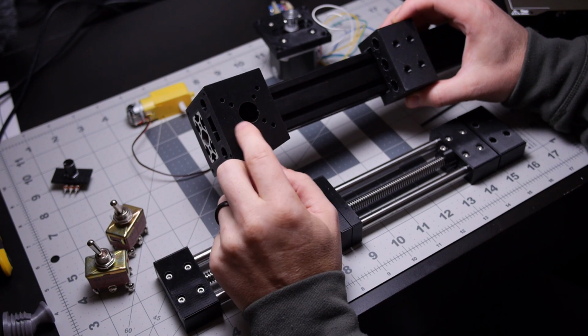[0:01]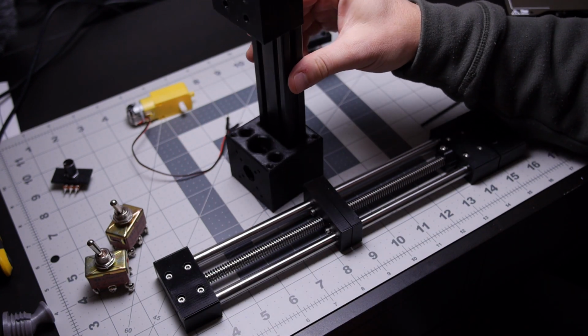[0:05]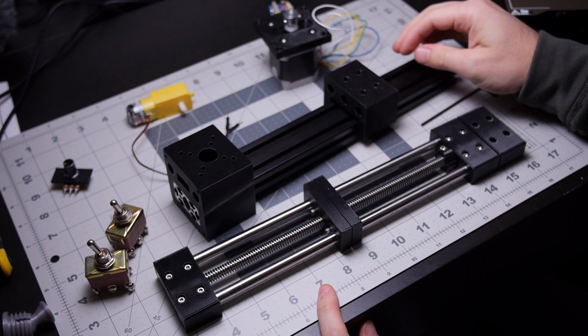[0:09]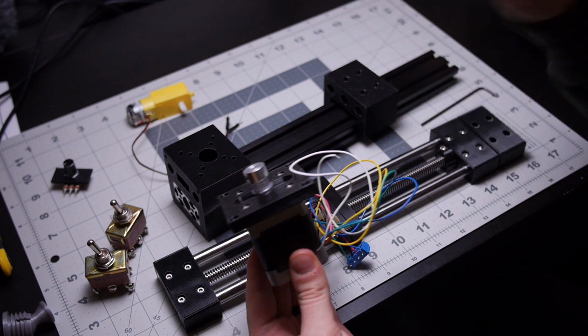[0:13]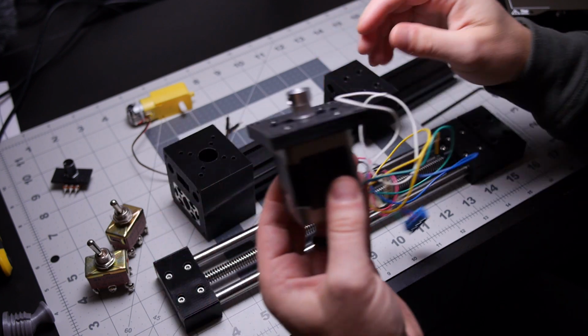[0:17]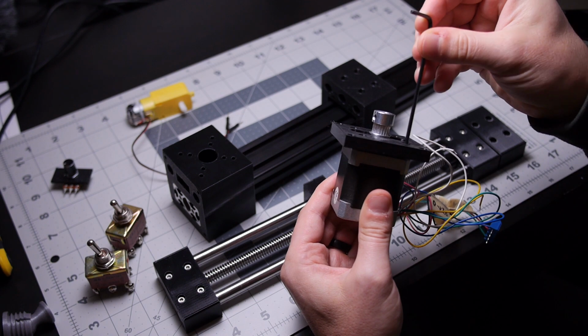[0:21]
This is a future microscope stand slash camera slider, and I've already tested it with the stepper motor mount, and well, I'll show you what I discovered there, which is exactly why I like 3D printing so much, because I can just put what I think makes sense and then print it while I work on something else, and then I get the real part and I can see where I was way off, and then make some changes and do it again.
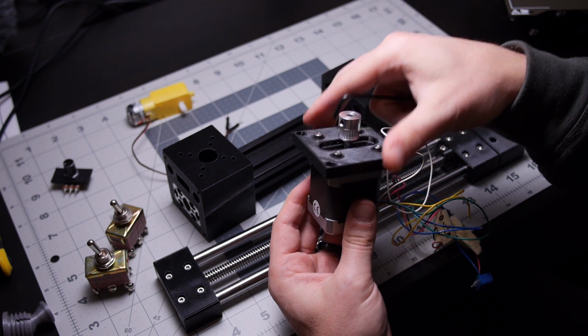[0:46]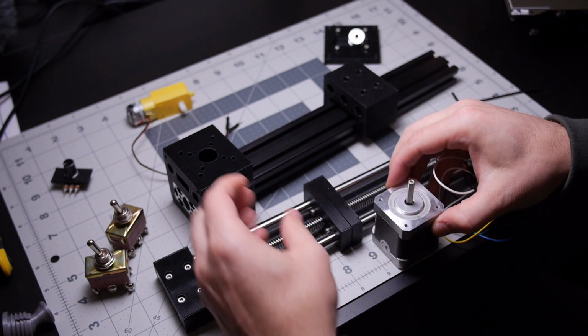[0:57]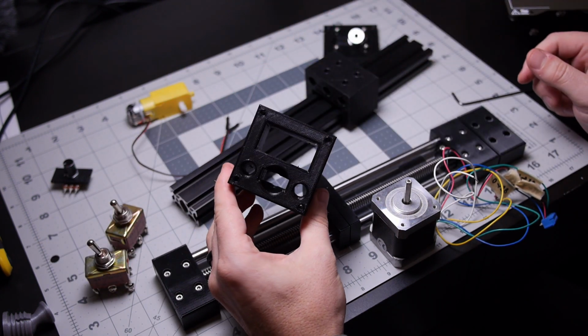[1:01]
So it's a really nice way for someone like me who likes to see, feel, touch things, to see how stuff goes. So this is that part that I printed the other day, and trying to make it for multiple options.
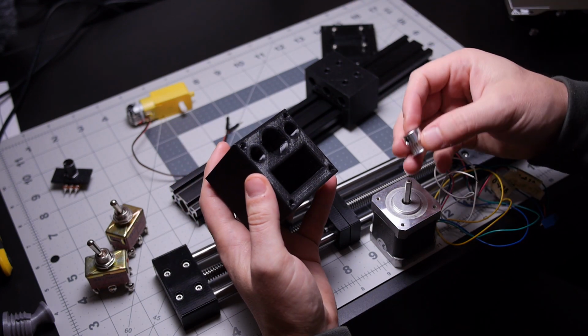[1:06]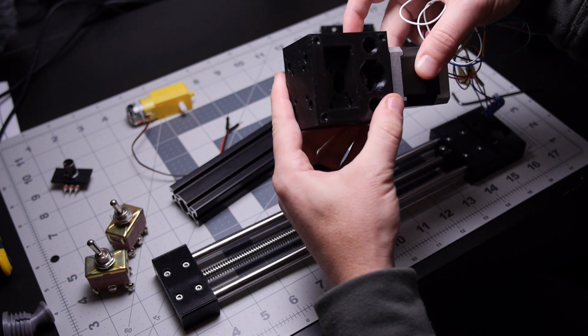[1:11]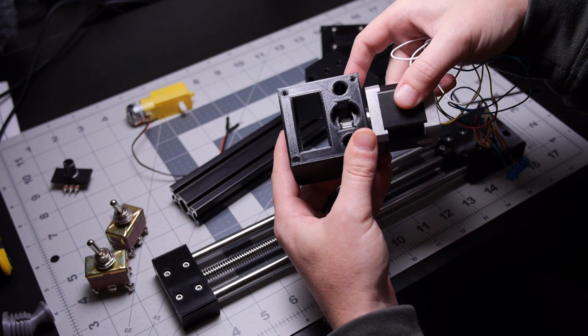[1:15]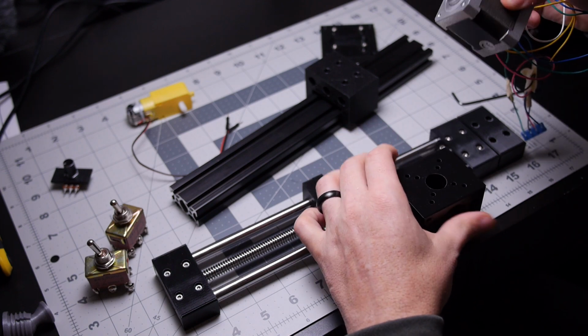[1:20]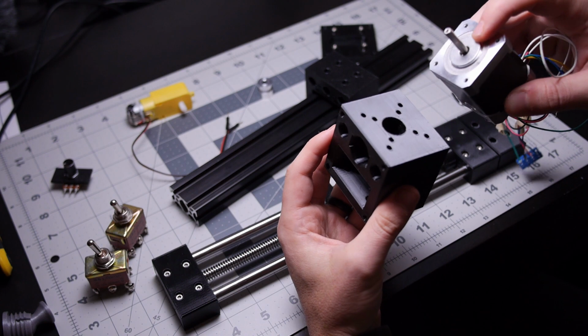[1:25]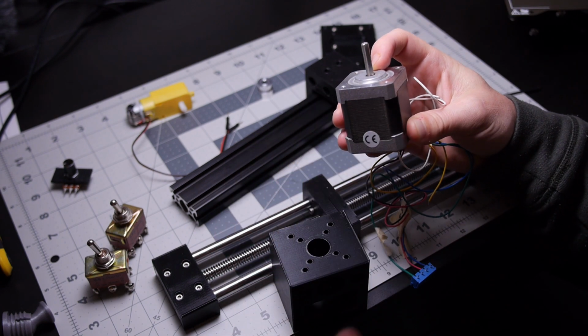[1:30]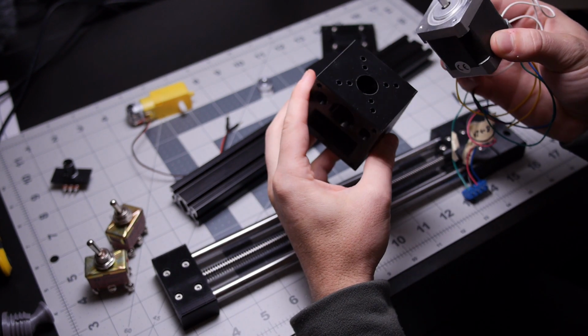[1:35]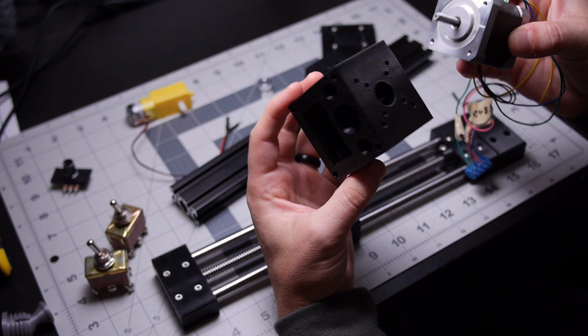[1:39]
So as an example, you can run it with the timing belt, but as you probably could see there, what I didn't account for is this bump on the stepper motor. It actually has this sort of raised ring right there. So I didn't make a counterbore hole for that to go in, so that wasn't working.
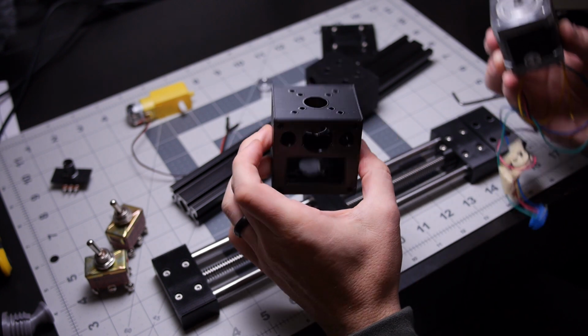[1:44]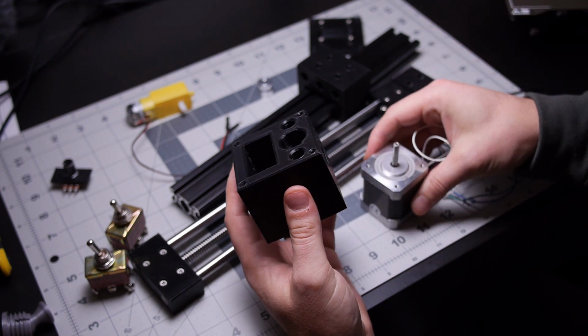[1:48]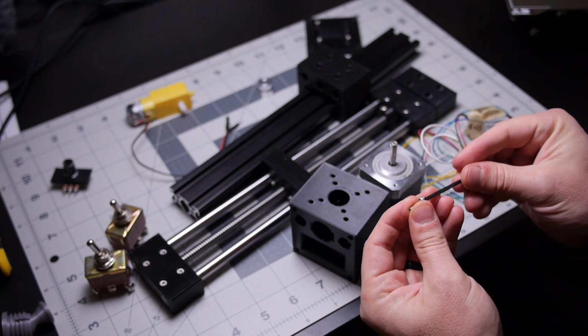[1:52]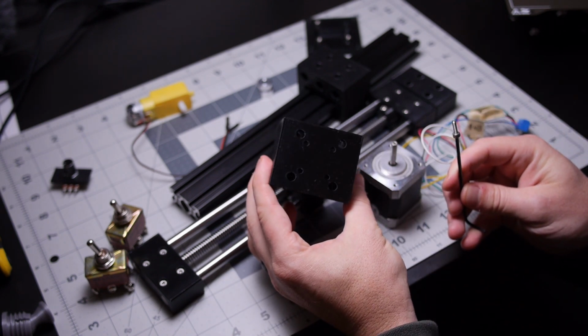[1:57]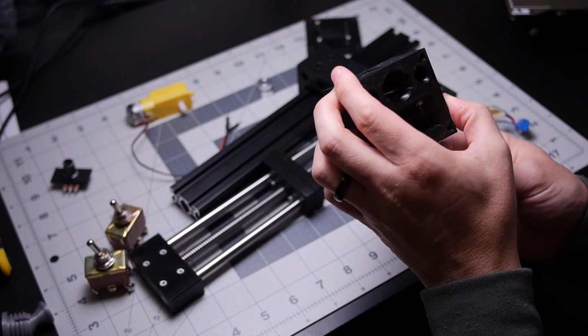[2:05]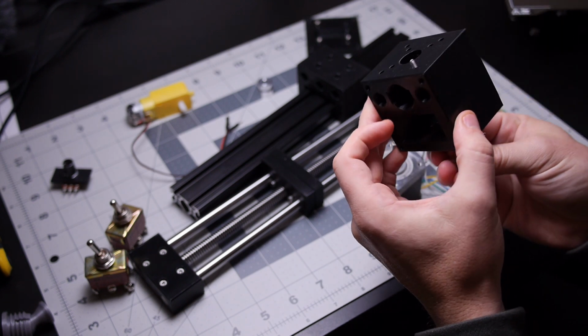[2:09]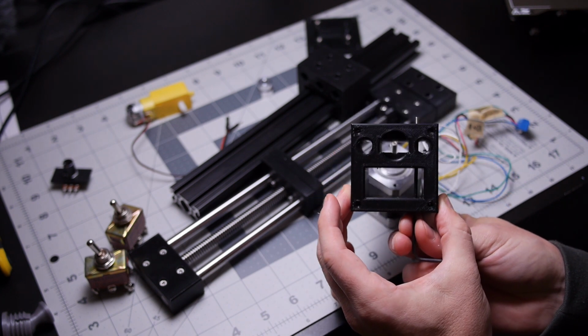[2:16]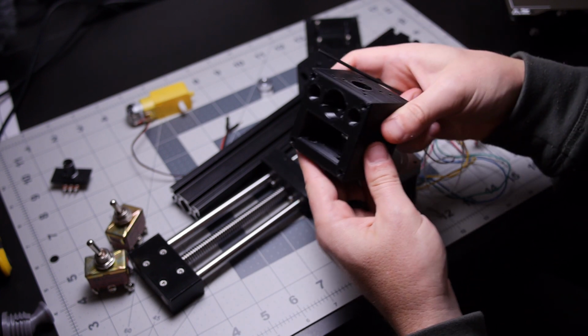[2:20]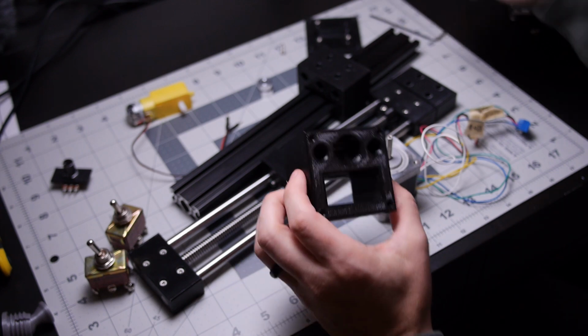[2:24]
Hole placement worked, and what was actually really neat is how I thought to attach this, which I will just show you here. I went through from the bottom there, so you can see through. I put holes all the way through the shaft openings so that you can stick a screw all the way up through there and attach it that way. And once you get that in there, there's still clearance for the shaft. The only downside is that obviously the shafts have to be installed after the motor, but I thought it was a fun little thing to test.
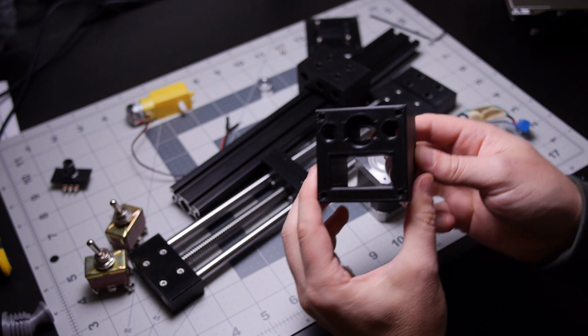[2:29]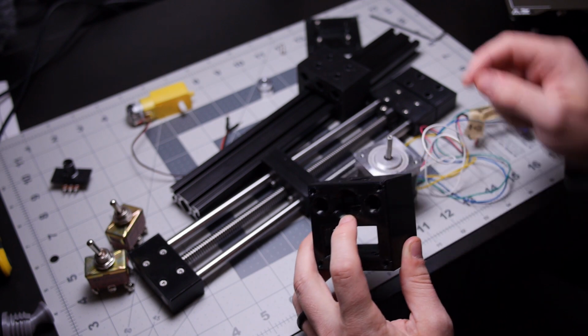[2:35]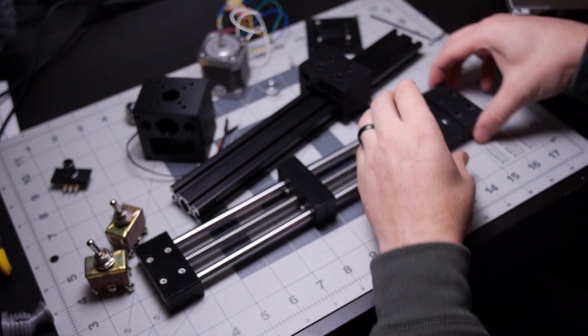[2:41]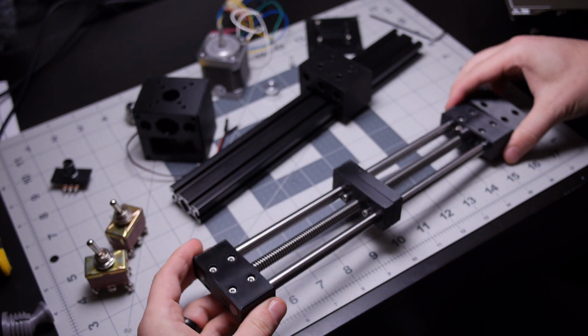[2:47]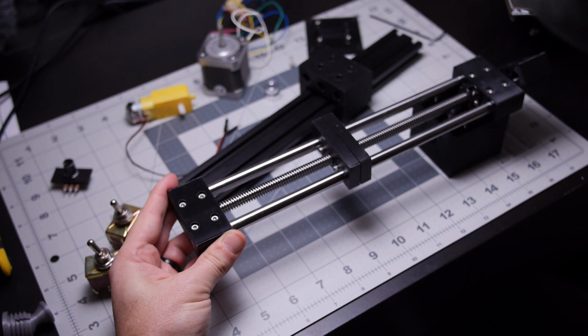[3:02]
But now I want to see if the inside diameter in here is big enough for this 3/8-12 shaft or threaded rod that I've got. So this was the first sort of test that I did. I will see if I can show you how this works. So this is just a basic little slider. See, is that in focus? There we go. So this is just a basic little slider that I made. Works really well, but that was my version 1.
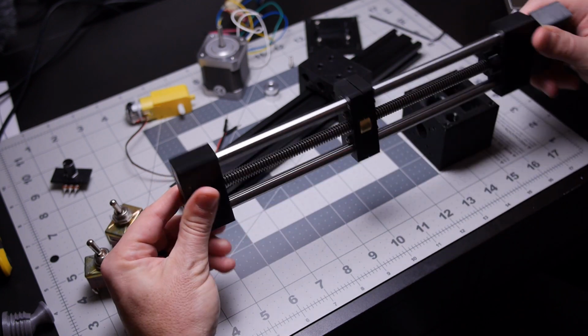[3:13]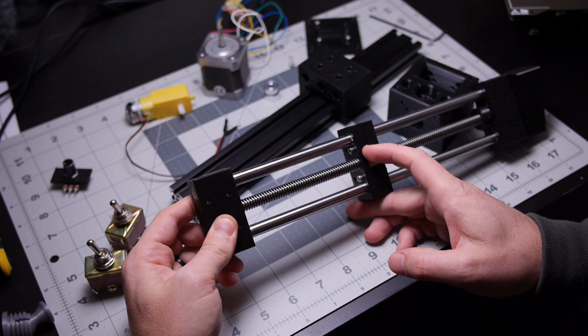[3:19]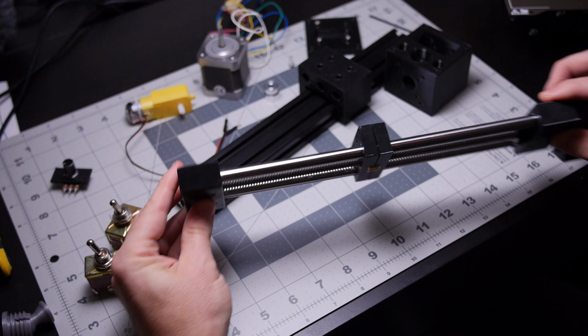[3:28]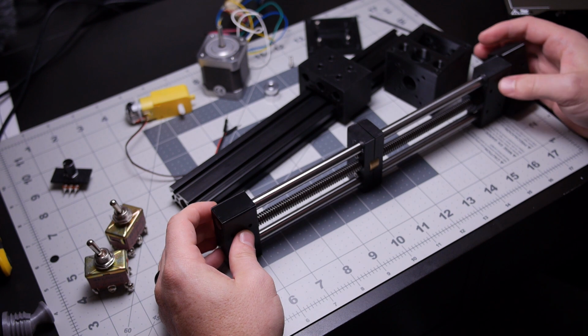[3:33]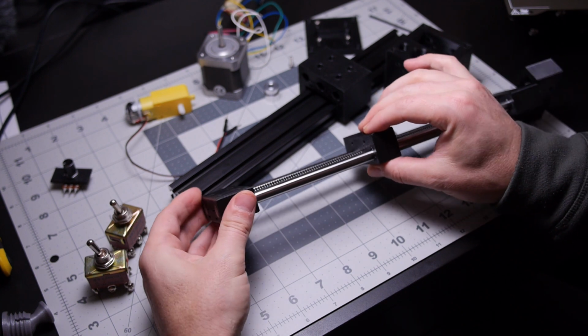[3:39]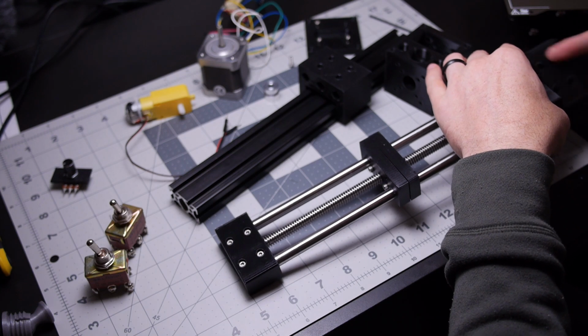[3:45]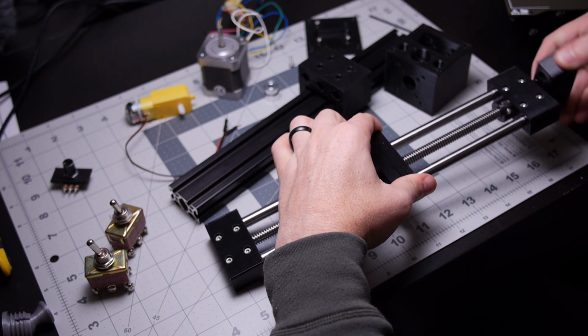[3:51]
This needs to be a little bit wider, and you can see here's the threaded nut that transfers the motion. What I tried for here is like a sandwich version where it squeezes it together, but you can possibly see from there that there's a bit of an angle where it's tighter at the top than at the bottom. So that's not ideal because that's putting a little more pressure on the shaft, which is making it not slide as smooth as it could. And the second thing is that it's just too narrow, so if you were to apply any force there, it's going to bind a lot quicker. But anyway, that was a quick version 1.
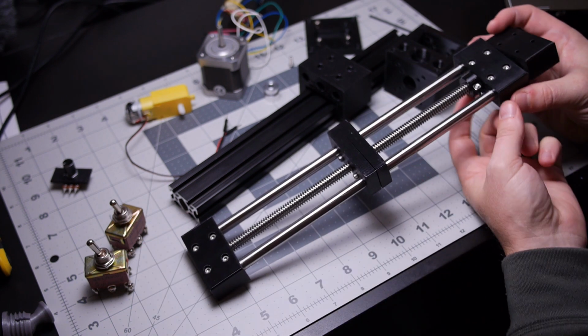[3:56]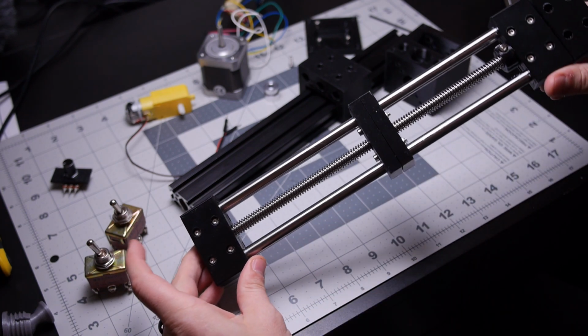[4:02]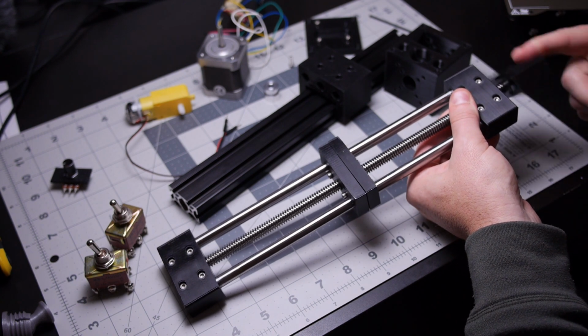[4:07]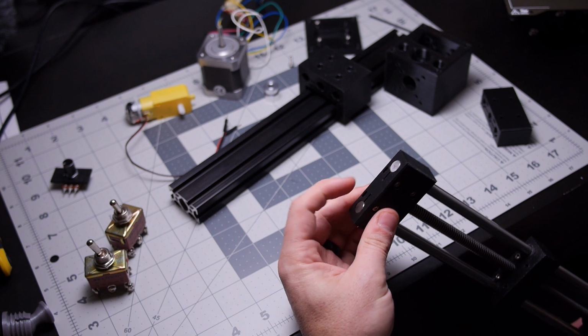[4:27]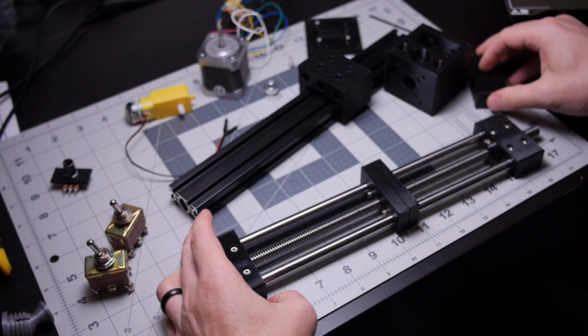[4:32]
I also did this shaft collar, which works totally fine. Now I'll show you a bit about this. This end, it goes all the way through. This was just an earlier piece that I made that I used as a handle then. But this goes all the way through, just like this one here. And that's where this is sticking out to attach a gear, motor, handle, whatever. But then at the other end, that is capped off, so it only goes in about this far. So that acts as the bearing and also the stopper on that end, so that the only stop you need
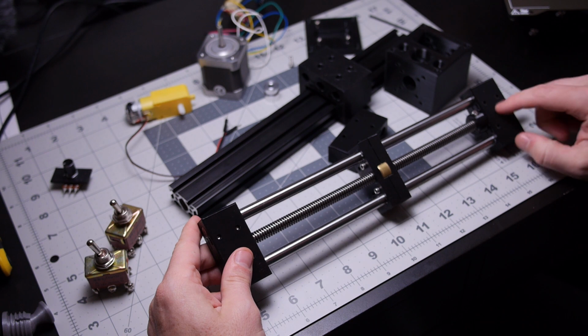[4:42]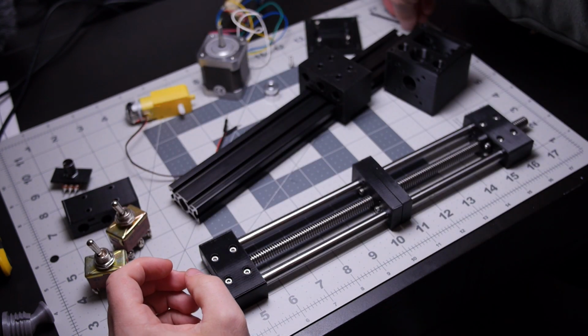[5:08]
is this piece here. Now with this, the only 4 pieces that are not printed or nuts and bolts are the 2 shafts, which are 3/8 by 12 inches, the threaded rod, which is 3/8-12 threaded, and the nut for the threaded rod. That's it. Everything else is just using these plastic pieces as the bearings and the frame and everything. And I'll show you that while I take that apart and then test this with some of these other pieces.
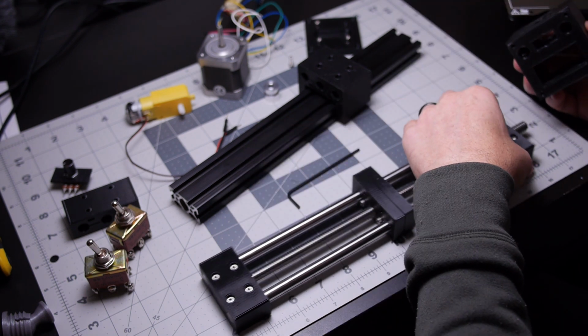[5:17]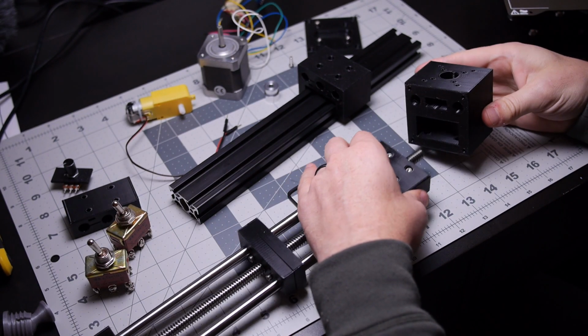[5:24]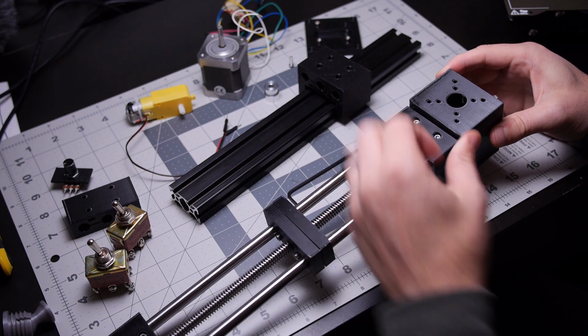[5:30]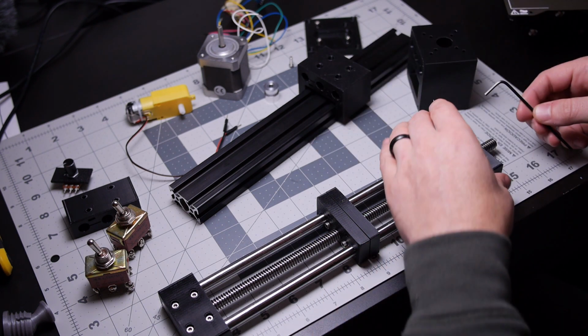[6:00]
Actually, I guess we can test this. We can do this first test without really anything else. Let me get it focused in over there. All right, so it goes in and spins somewhat freely. Again, the reason I'm doing this is because I wanted to see if I could do both a timing belt passageway and also the 3/8 inch threaded passageway. I don't know if it's a good idea, but while I was printing, yeah, I mean, that's pretty smooth. While I was printing the whole thing, I thought that would be nice to try.
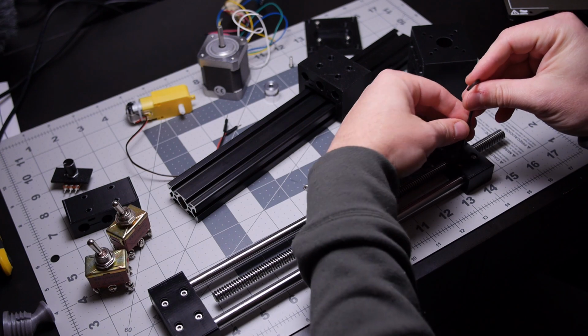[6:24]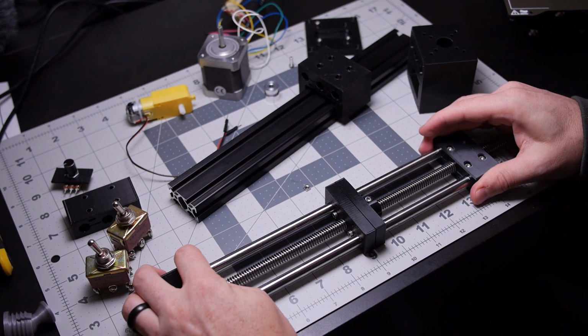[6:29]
All right, we can take this apart now and then see if the shafts are going to fit in there. There's that. And these just squeeze the shafts a little bit tighter. And I'll show you how these work in a second. I wanted a looser fit. The first ones that I did were a pressure fit and just crazy tight.
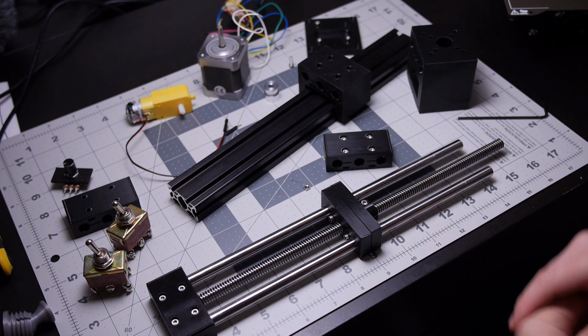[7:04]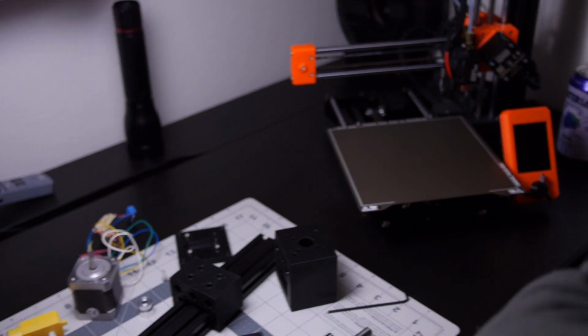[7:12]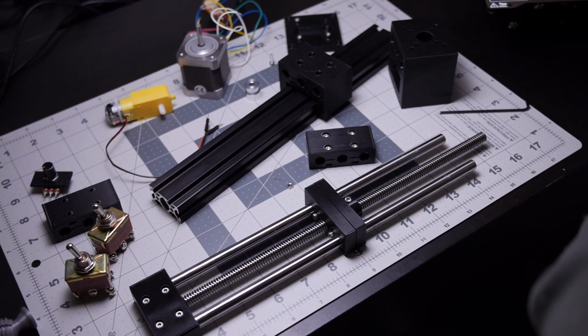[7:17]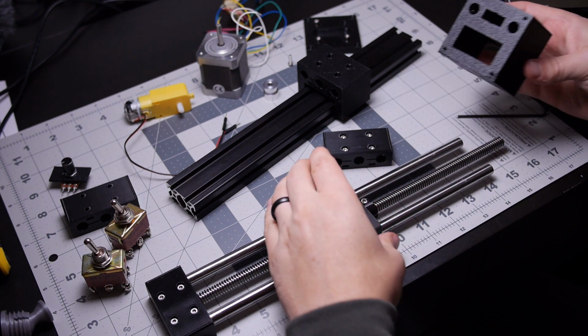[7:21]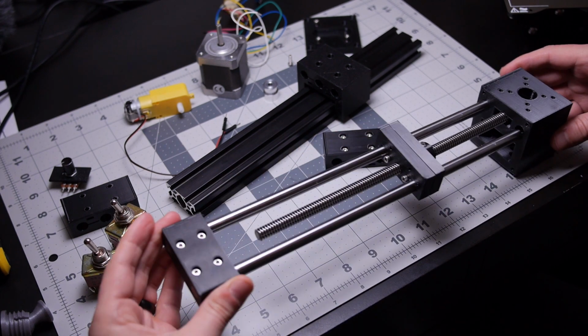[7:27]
Okay, so I think you can see in here there's some square nuts that are just slid in there, and then M3s come down through the top, go into the square nuts, and then I did these two slits in the face to squeeze on the shafts, and I left a little bit of solid material around here to keep that from getting squeezed. Now, this isn't exactly my own original brilliant design. If you look closely at that, you'll see some similar design patterns. But, all right, let's see if this is a suitable replacement for that. Ooh, perfect fit there. That's really smooth.
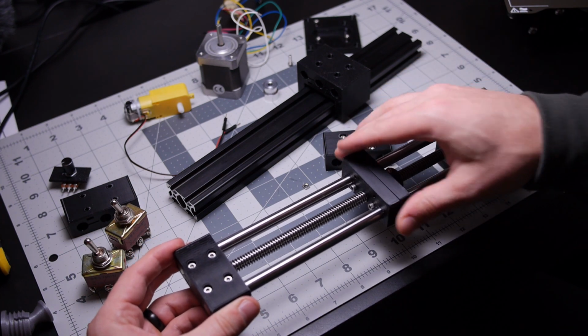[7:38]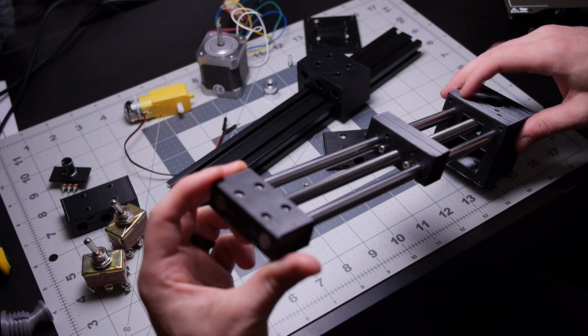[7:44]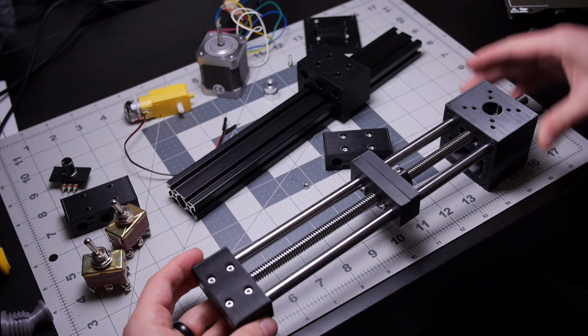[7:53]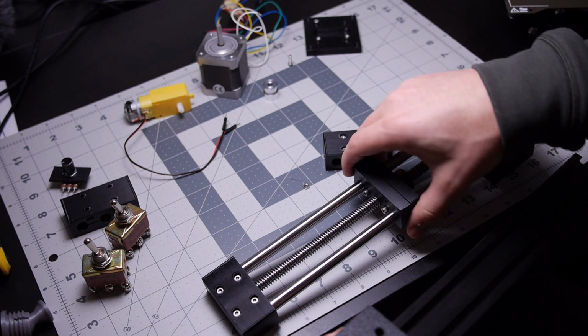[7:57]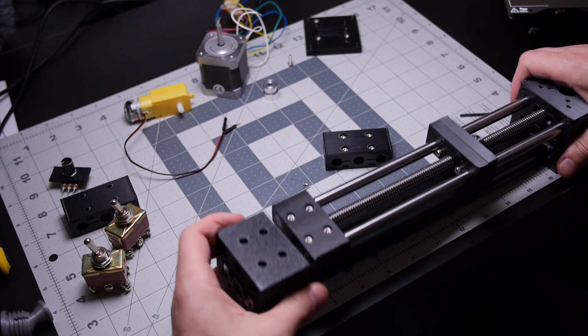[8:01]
Yeah. All right, that's actually good. But I didn't put any locking mechanism in this one, so I can't clamp that down anymore, unfortunately. But again, this is just to kind of test things, so now let's add it to here and see how it's all sort of looking.
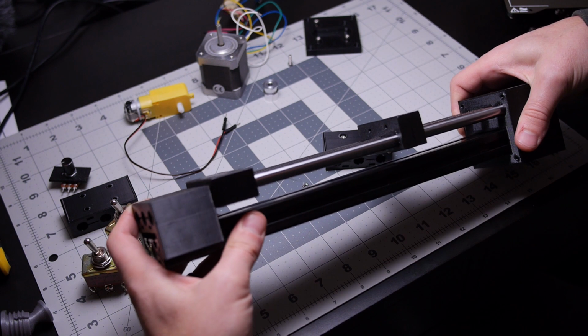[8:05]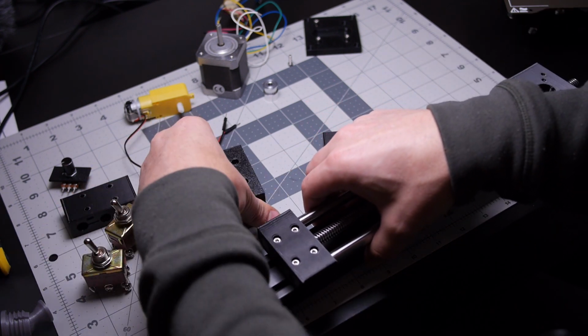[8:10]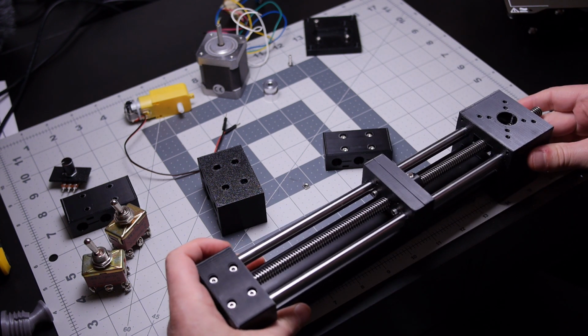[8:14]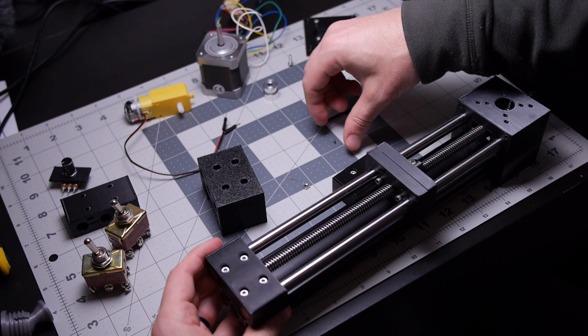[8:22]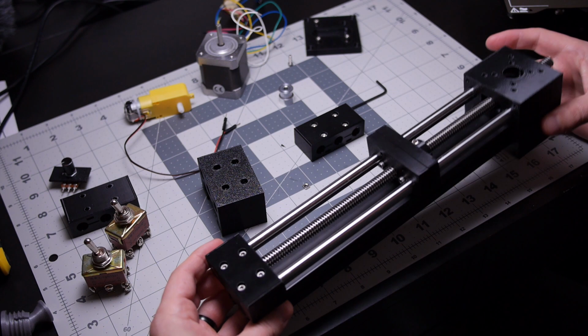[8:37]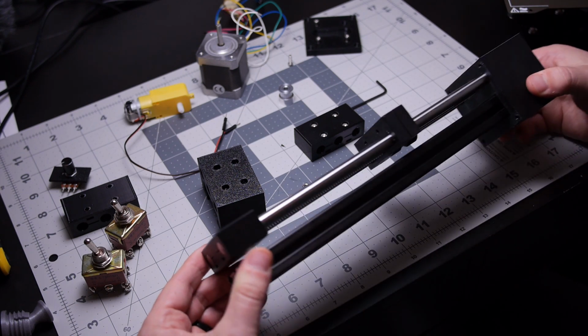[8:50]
Well, the idea, if I didn't mention what this is that I'm making, I'm trying to make a camera stand. So it's a camera slider and also a vertical and horizontal camera slider, which is why I'm using the threaded rod for this version. A lot of camera sliders use a belt drive, the timing gear and belt, but the downside of that is that they rarely have the power to lift up and down, whereas with the threaded rod, you can go, and if you look on like the Prusa Mini that I have, for the up and down axis, they're using threaded rod. For the going across axis, they're just using a belt because it doesn't have gravity at play. But here you can see kind of how this is looking.
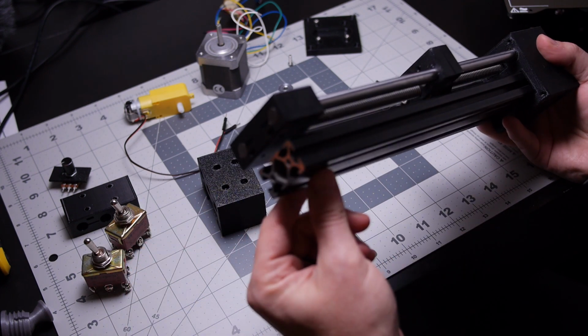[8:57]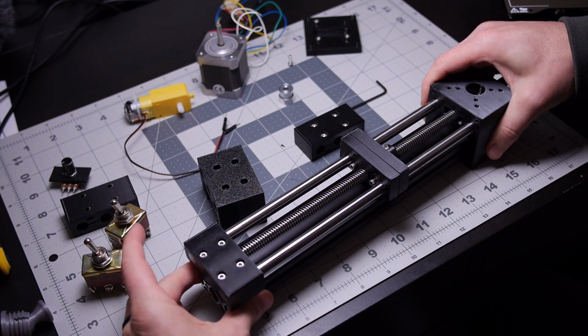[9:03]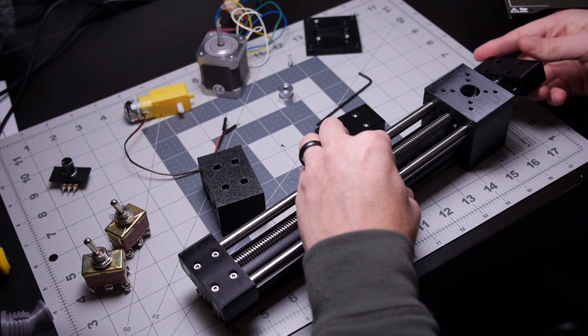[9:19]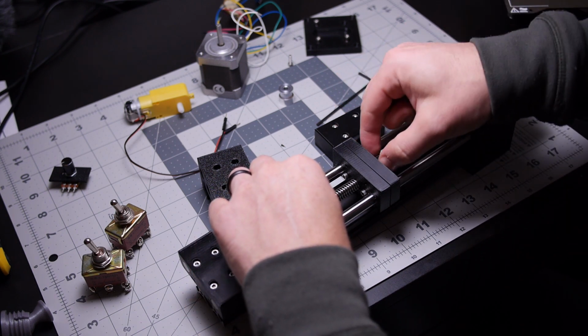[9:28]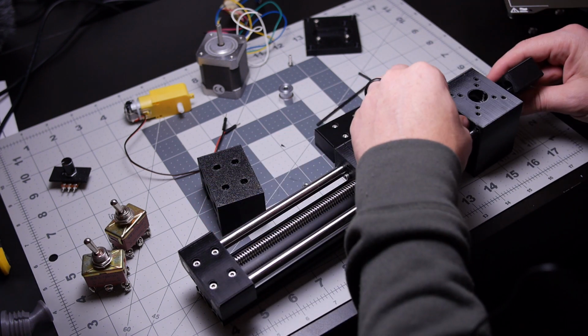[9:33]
So this is a 40 by 20 aluminum extrusion, and it just slides right in there, and it's a snug fit. I mean, there's no play. I did do a bit of a chamfer on the back side of this in case I need to make it easier to go on and off, but let's see which one's my handle one. Let's put the handle on here and see if this is working. Okay. Get our lock shaft little collar back up there.
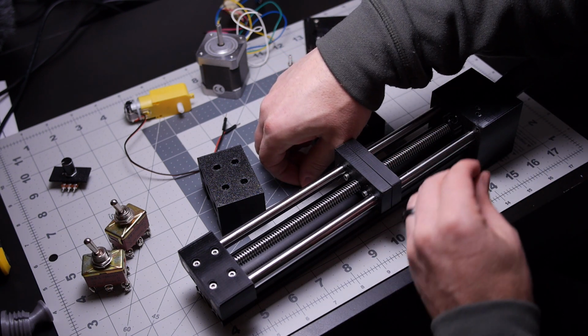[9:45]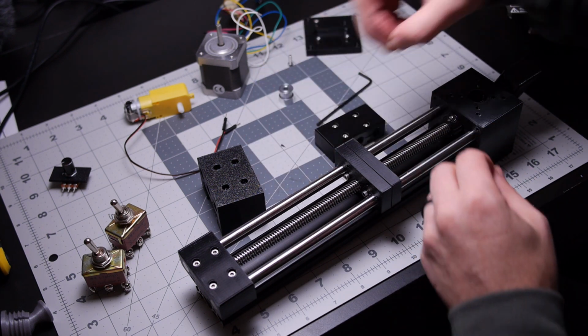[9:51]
I was actually surprised with how little play I was able to leave with this, with just using the PETG printed parts. I have some nylon sleeve bearings that I thought I might need to use, but this was actually a lot of fun to do this way. So once I get it all set up, I'll do some wear tests.
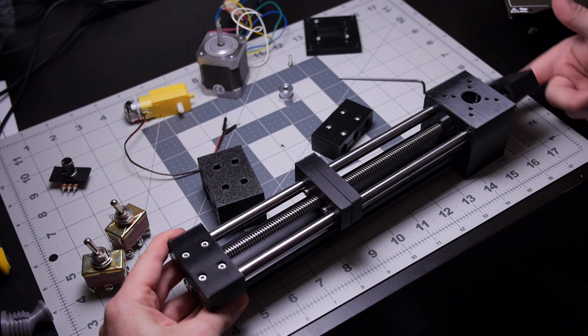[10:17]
All right, so there we go. Now we are set up, and we've got the added stability of that 20 by 40 millimeter extrusion, and this is starting to look pretty nice. See what all design changes I need to make. Definitely, obviously, I need to make it where I can mount that motor in there. But also, that's just for the belt drive for this version.
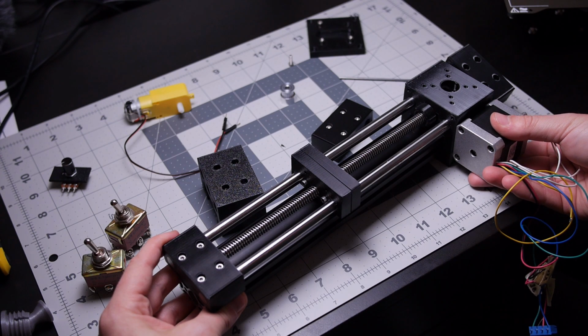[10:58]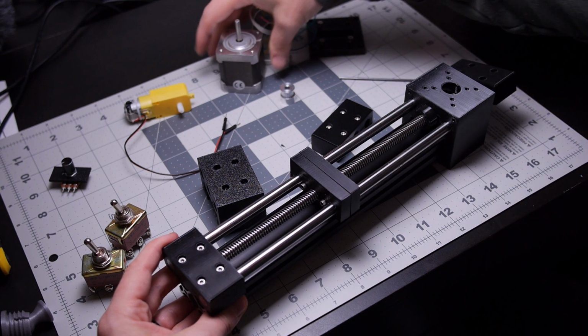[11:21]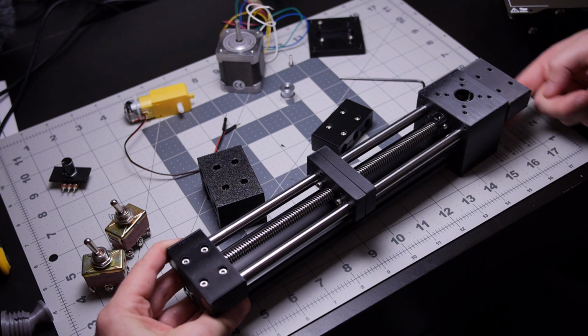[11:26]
I gotta decide if I want to mount, I was thinking about maybe mounting the motor over here. There's one option. Obviously, then another option is to mount it on the end somehow. But I gotta figure out what I want to do with that. If I mounted it here, I'm thinking to just do the printed timing belt gear to go on the 3/8 threaded rod, and then put this one on here, and then just do a little connection there, which I think would be nice. But I might also just do a handle first, so get the other end of these, print another one of these tomorrow, just with that one change.
Because yeah, my concern was that having the very narrow, or the very limited surface contact between the threaded rod and this block was going to cause a problem, but this is actually really smooth. It's actually, I guess, smoother than the other one because of that, because it has even less there. So all in all, that's pretty exciting.
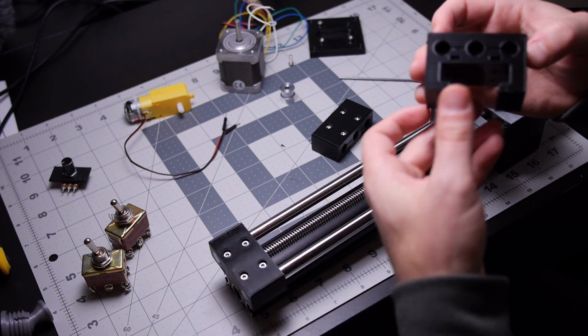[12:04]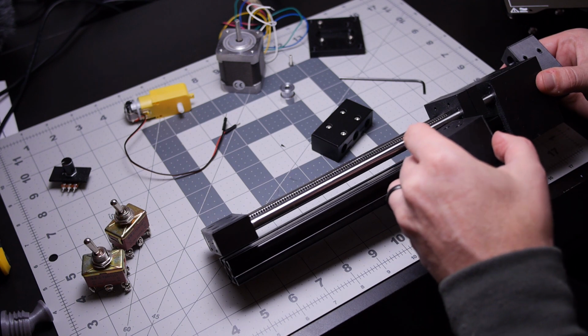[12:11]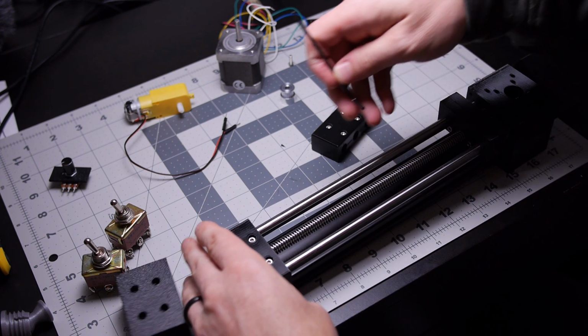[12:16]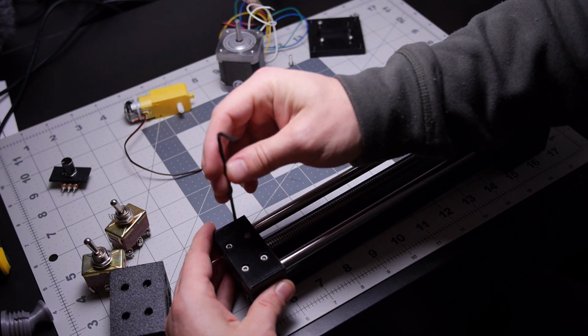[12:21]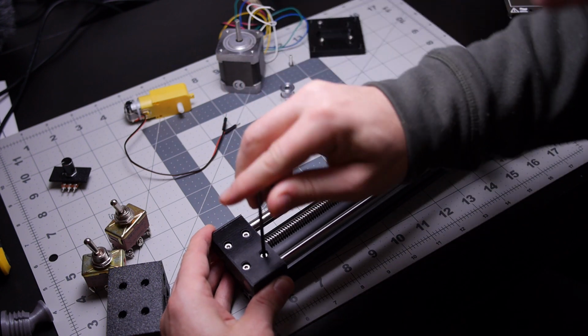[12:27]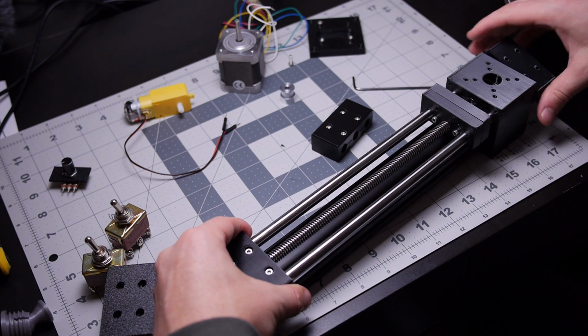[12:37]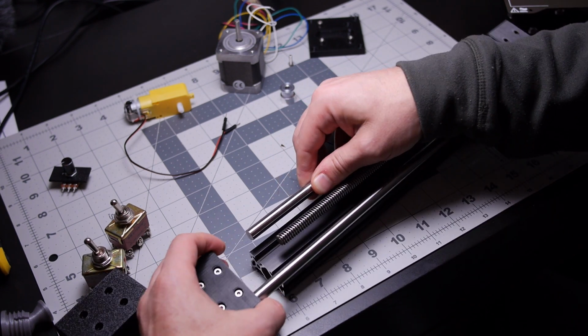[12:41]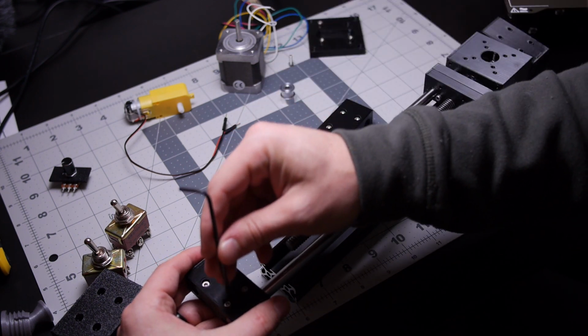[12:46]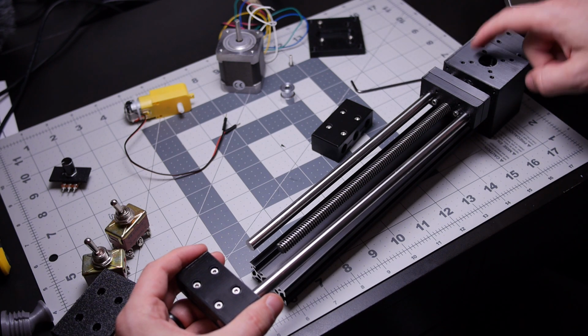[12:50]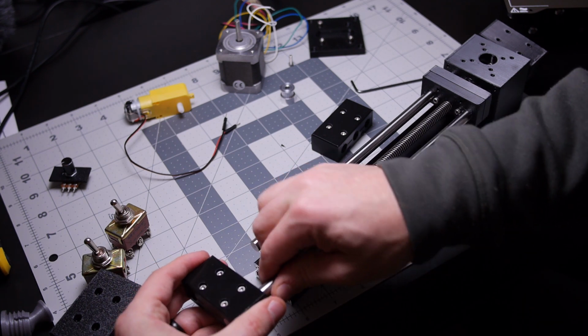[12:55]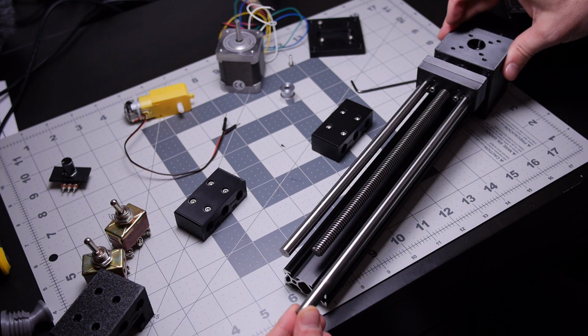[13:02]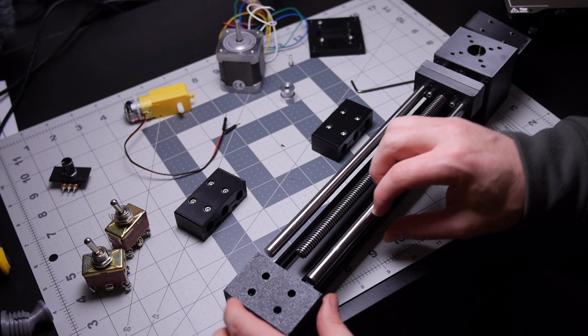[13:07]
Since we're doing this, let's actually try this end block over here, because, you know what, I think it might actually be the right height. So this could be fun. Let's see if this gets us fully attached to the aluminum extrusion. I did the aluminum extrusion because I really like it as the backing, and it was convenient to be able to just order. Yeah, I'm gonna need to tighten. Gonna need to add tighteners. So that's another thing. I need to add the offset here, and I need to add tighteners of some kind for attaching these shafts. These tighteners worked great, so I'm not sure if I'm going to just scrap the belt option or what.
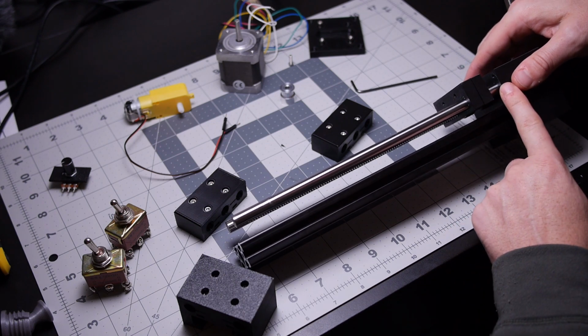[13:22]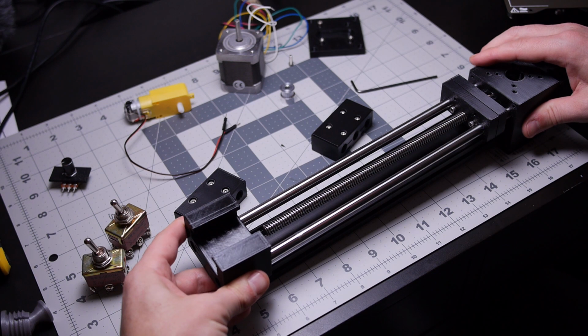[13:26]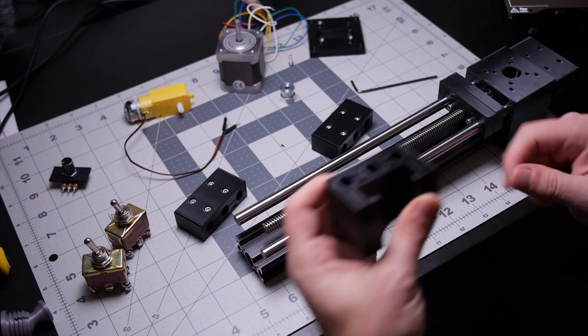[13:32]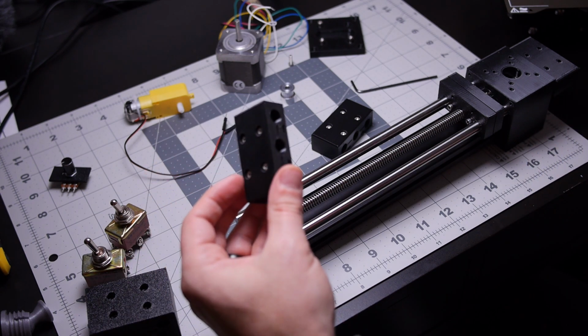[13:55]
Okay, yeah, I changed the offset, or the distance between the extrusion and the shafts between these two designs, so this one's not actually gonna fit in there. And also, I printed this one wrong. I printed it like this. If you saw a little short video I did the other day of the fail, you can see there's some loose stuff down here, because you can't go with just a right angle overhang. You gotta do angles, but also I think that collapsed my holes. So that part is probably pretty much worthless.
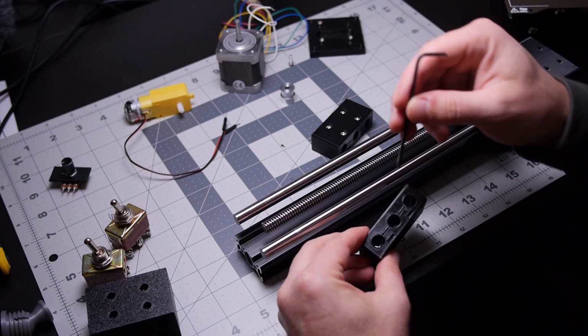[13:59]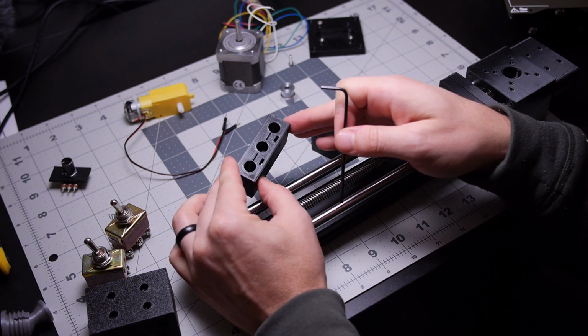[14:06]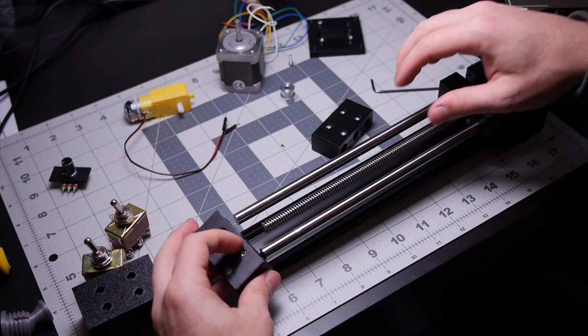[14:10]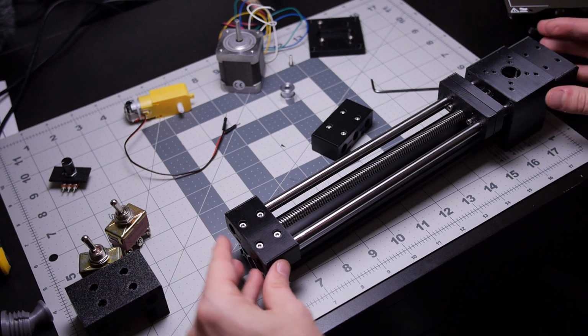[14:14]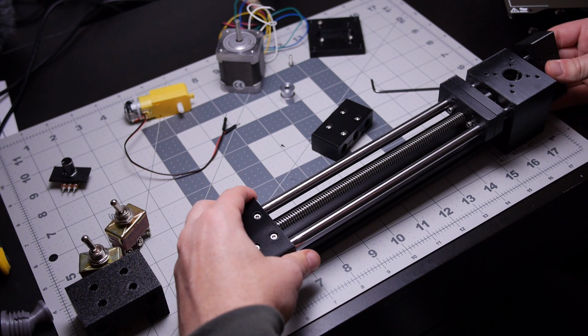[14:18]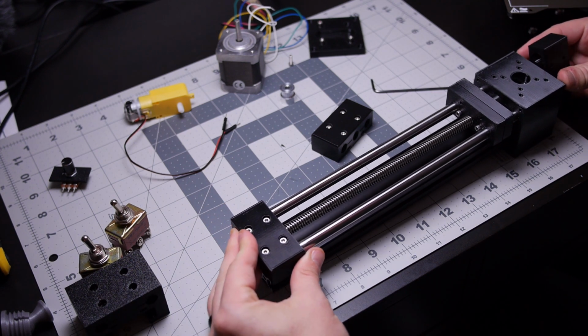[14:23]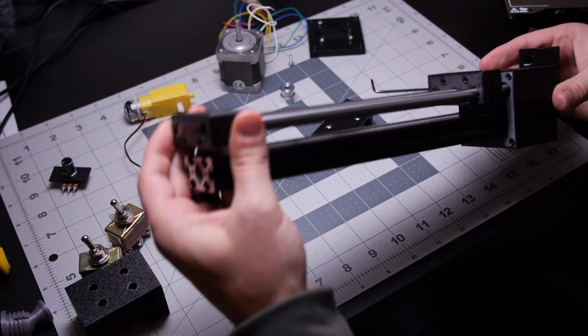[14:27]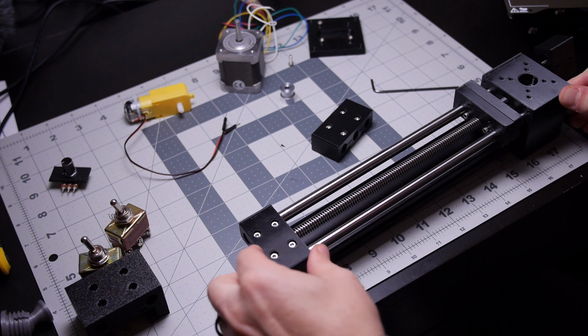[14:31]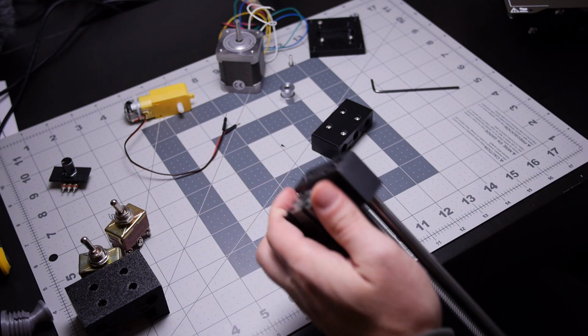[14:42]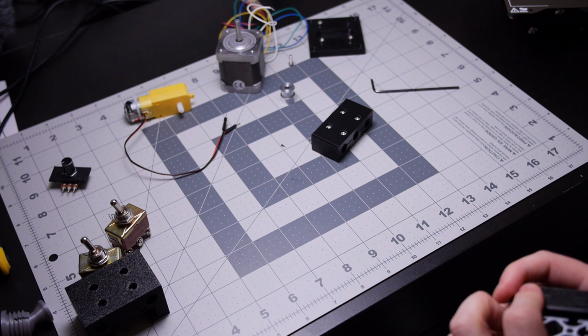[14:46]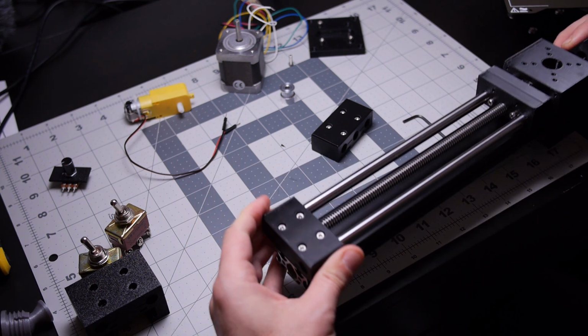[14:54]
But here, since I've got this one off, you can see that doesn't go in very far. Well, you can maybe see, the lighting and the focus I know isn't great, but that's how that works. So put that one on for now, so that we're still functioning, and push those flush. Get that snug fit. Not sure why that's not wanting to go in there the rest of the way.
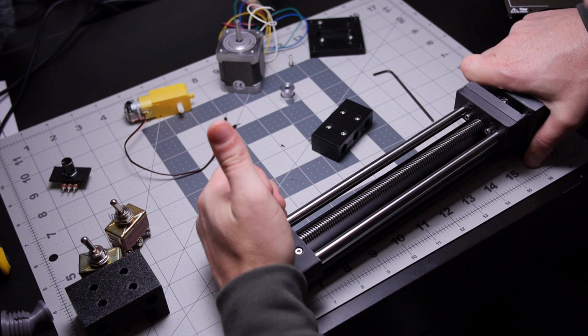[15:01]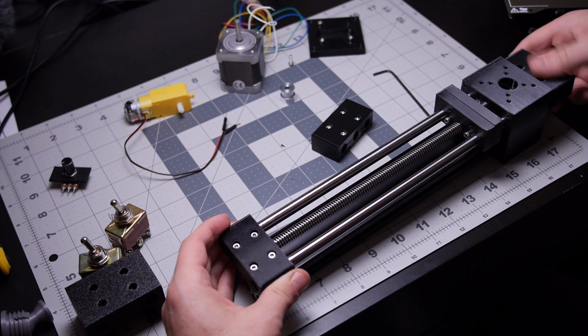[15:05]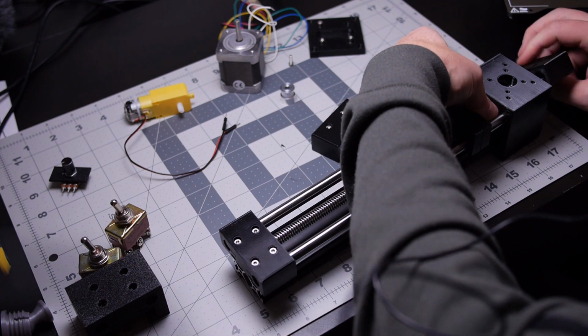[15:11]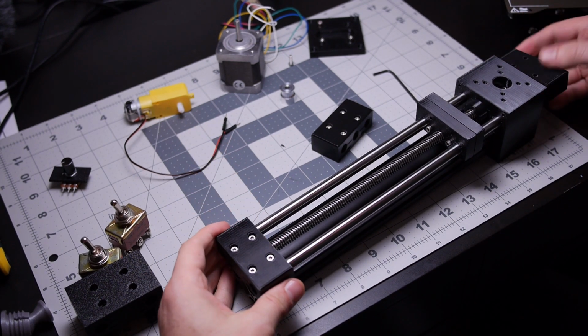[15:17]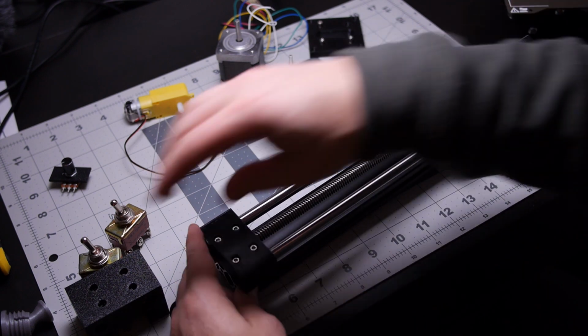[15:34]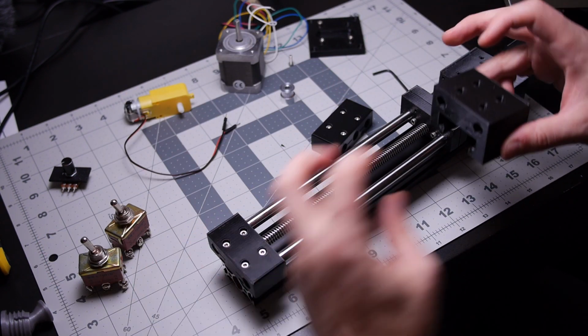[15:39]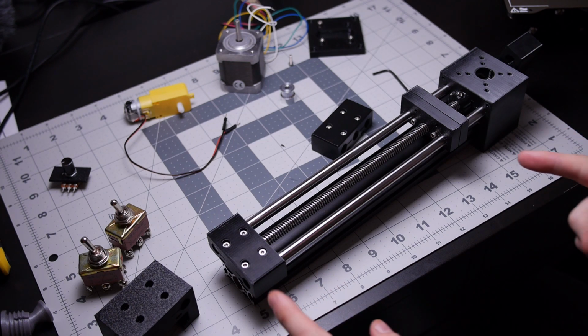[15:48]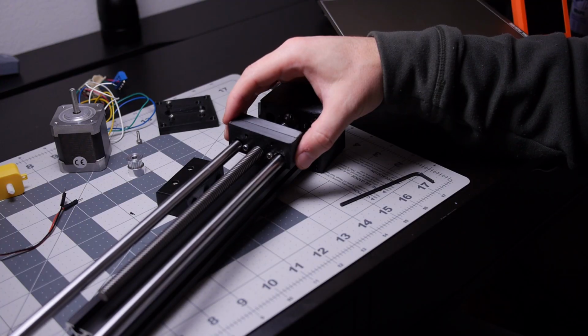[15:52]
Probably save you the time. Cut the video off here, and then next time hopefully I'll have a second one of these blocks so we can assemble this properly, and then get going on a longer slide on the middle so we got more stability and better mounting points. So yeah, that's it for this video, and next video hopefully have for sure an end block and maybe a slide going on here.